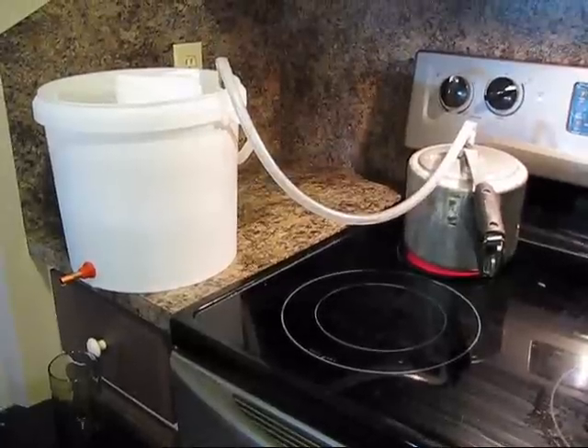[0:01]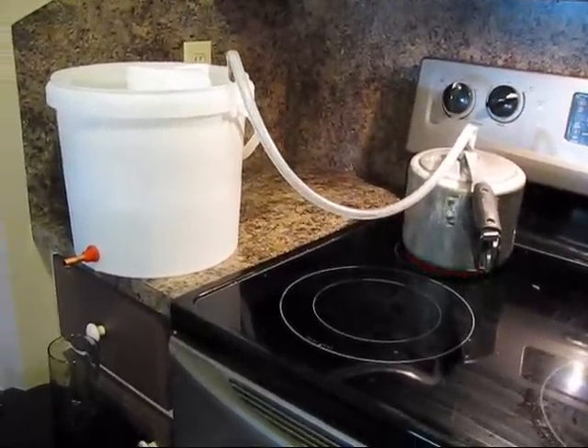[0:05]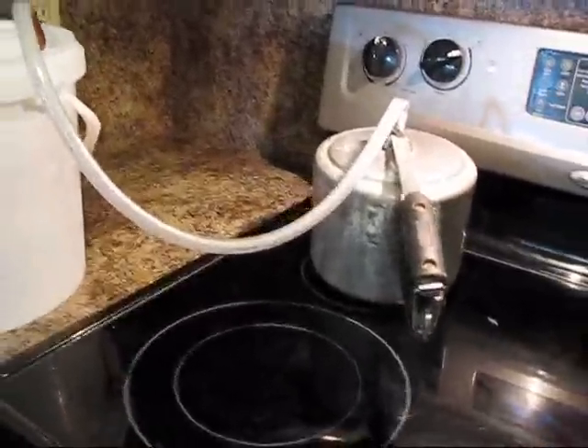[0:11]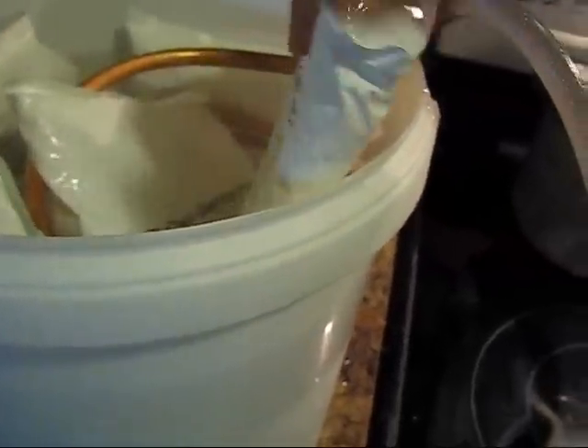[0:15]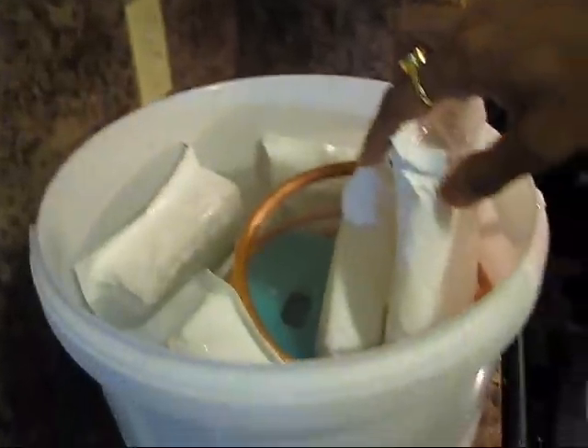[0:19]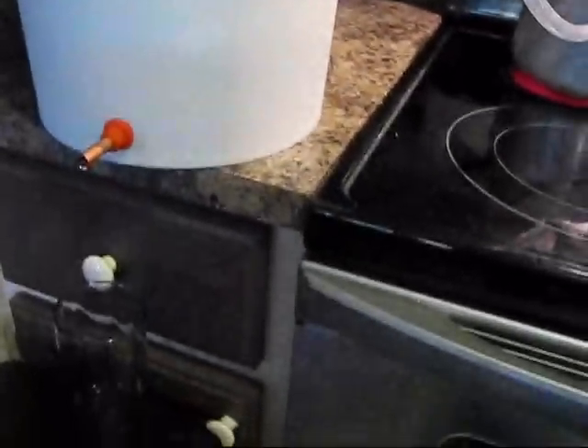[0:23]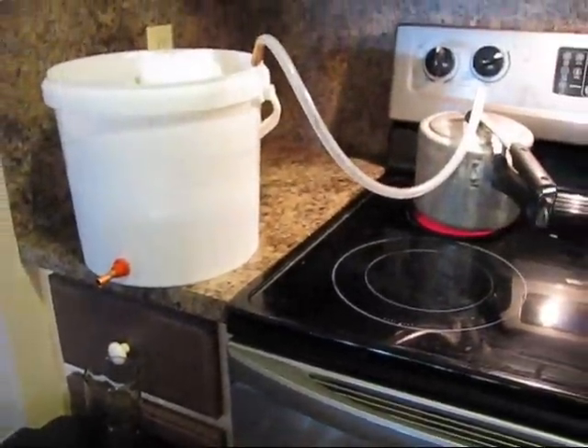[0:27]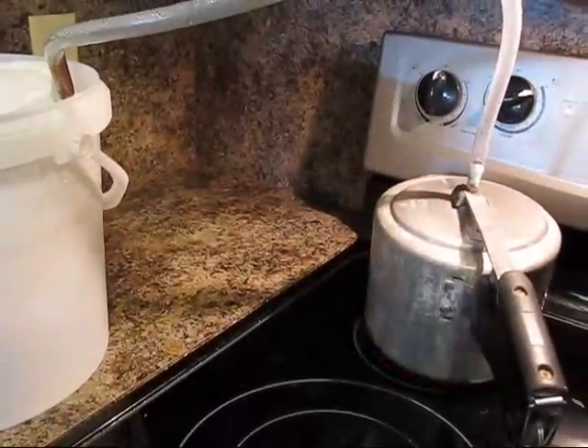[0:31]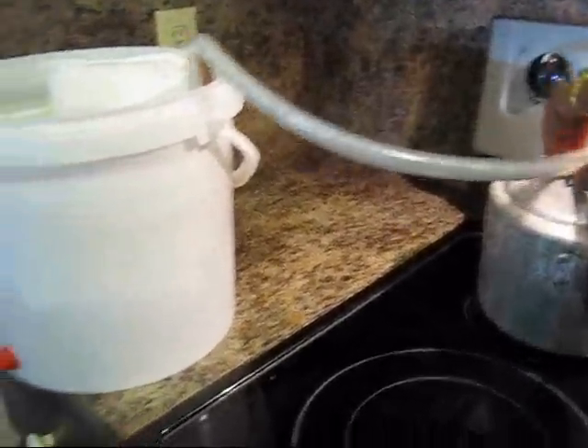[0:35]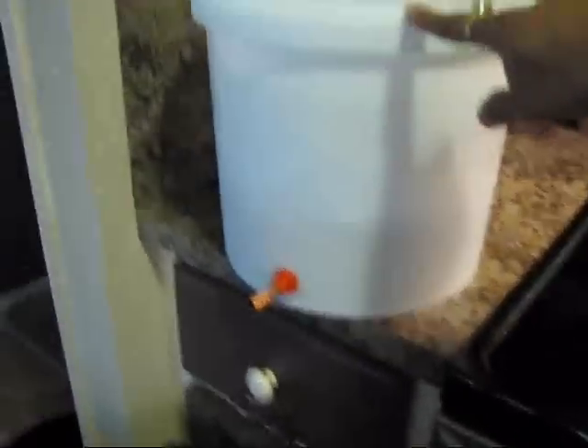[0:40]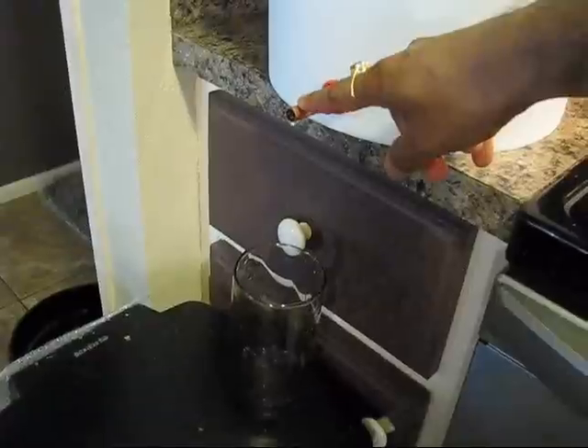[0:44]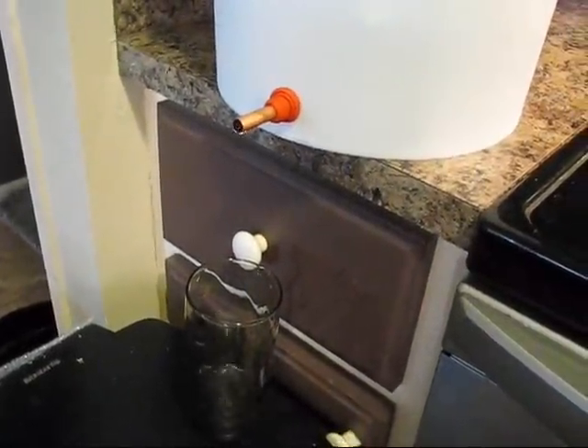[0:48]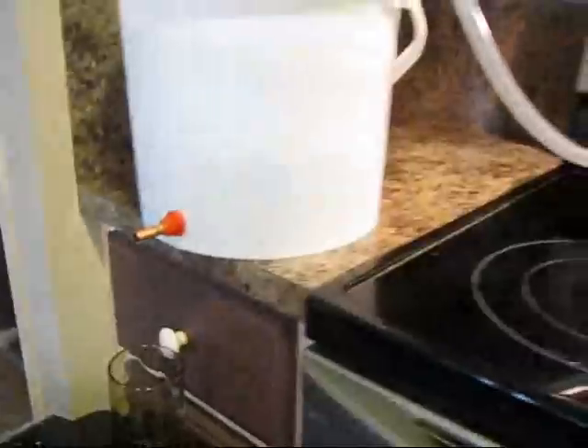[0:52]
Hello, in this video we'll show you how to make a steam distiller at home using a pressure cooker and copper coil with ice or ice pack in the bucket. You can see right now I'm just testing. This system is boiling water inside this pressure cooker, and hot steam is coming and condensing in this bucket, and I'm collecting these cold water droplets in this glass.
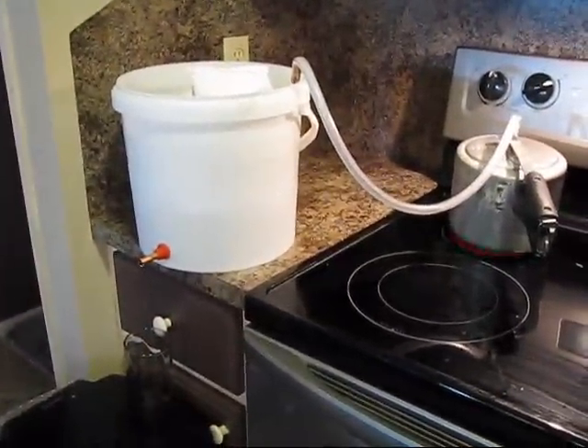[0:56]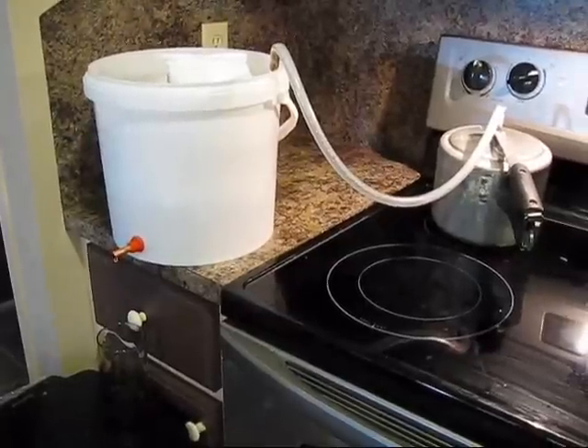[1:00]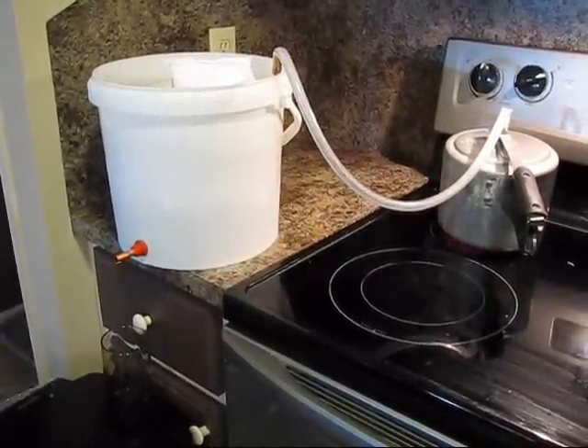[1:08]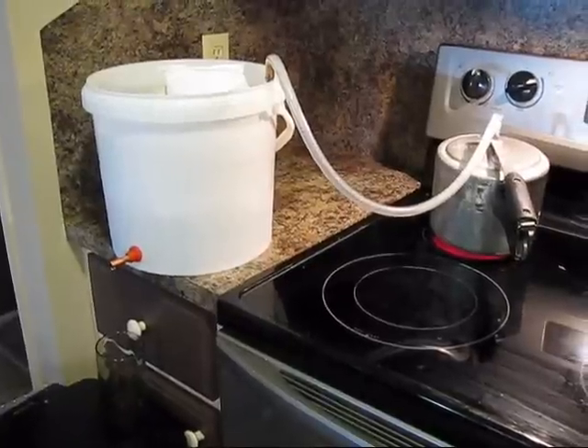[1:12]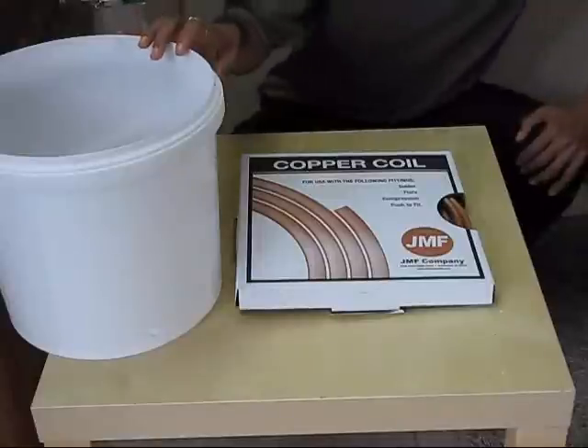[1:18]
So we'll show you how to make this very easy system. We can utilize this to extract essential oils or any other oil from the herb. So let's start to make this one. It's very easy, very cheap, not very expensive.
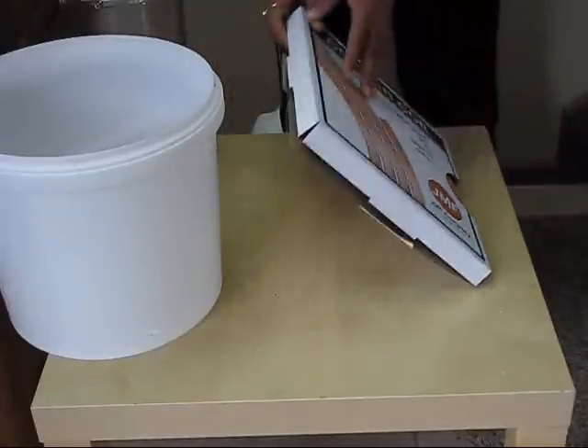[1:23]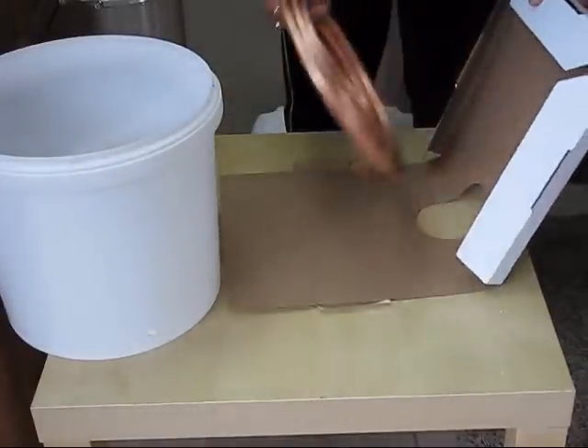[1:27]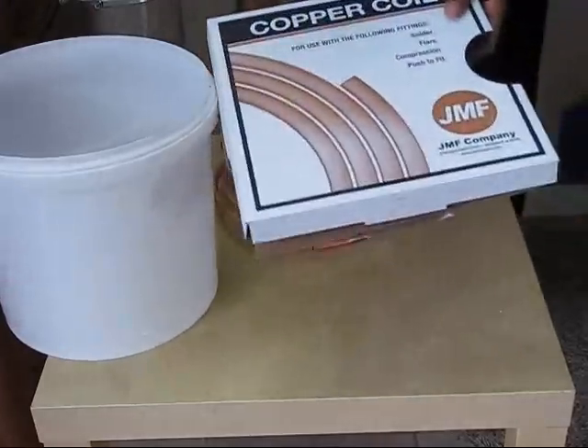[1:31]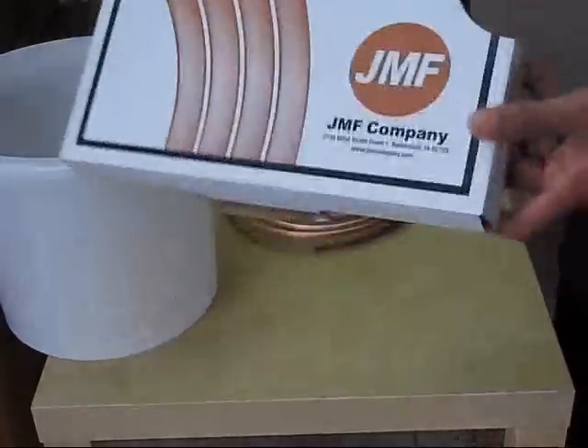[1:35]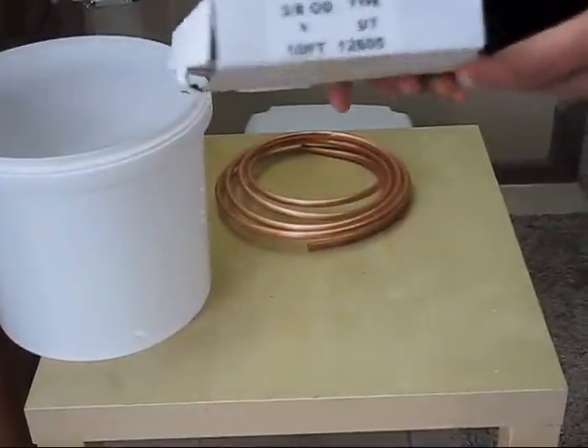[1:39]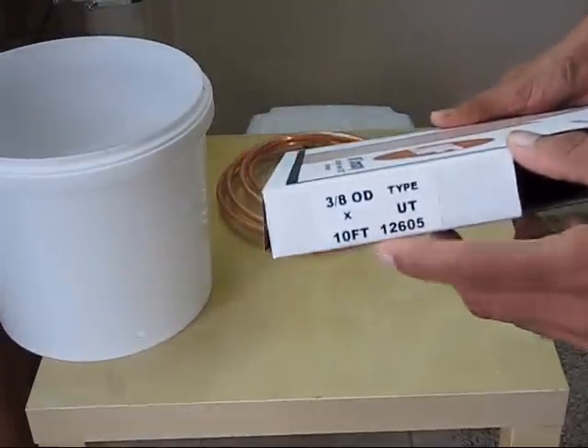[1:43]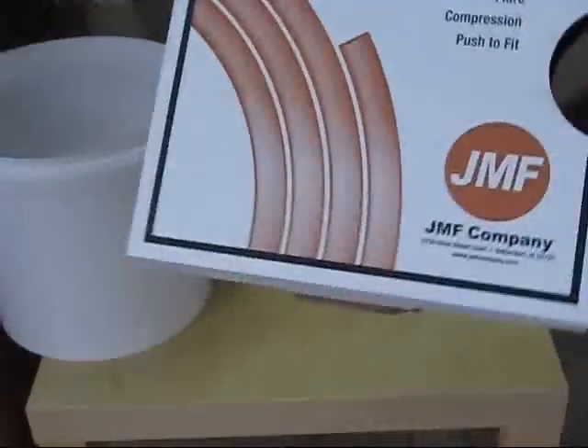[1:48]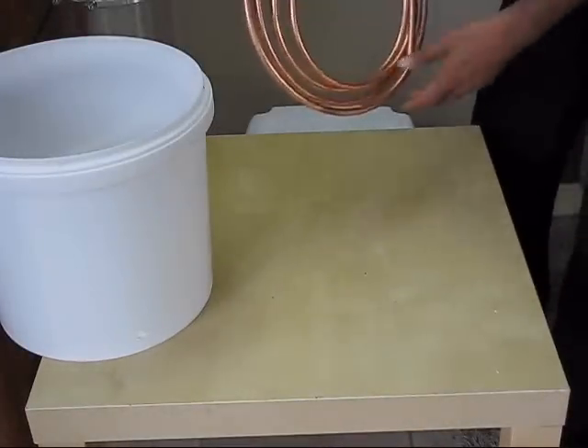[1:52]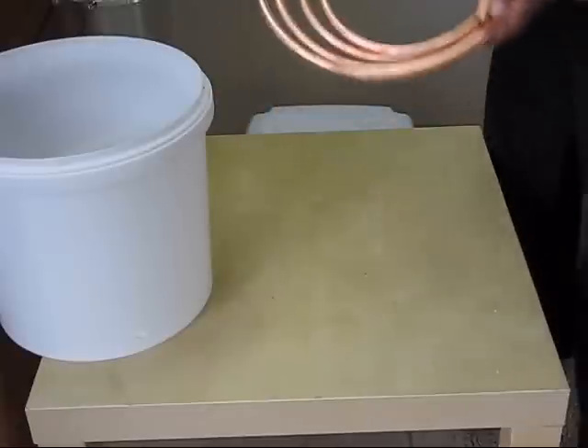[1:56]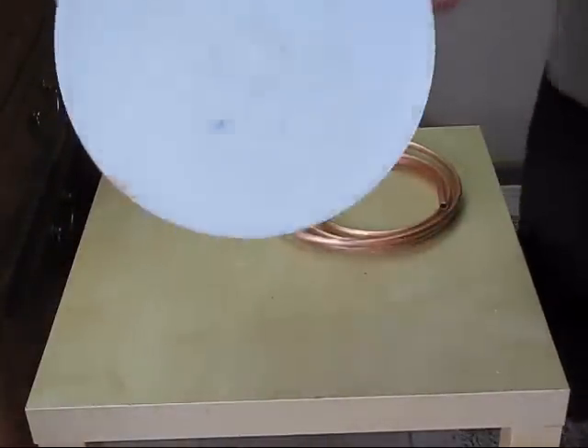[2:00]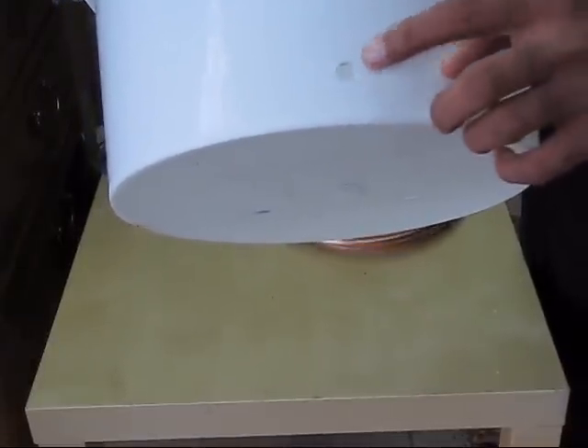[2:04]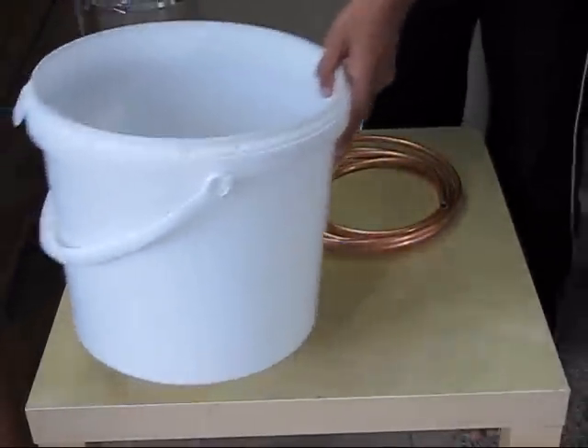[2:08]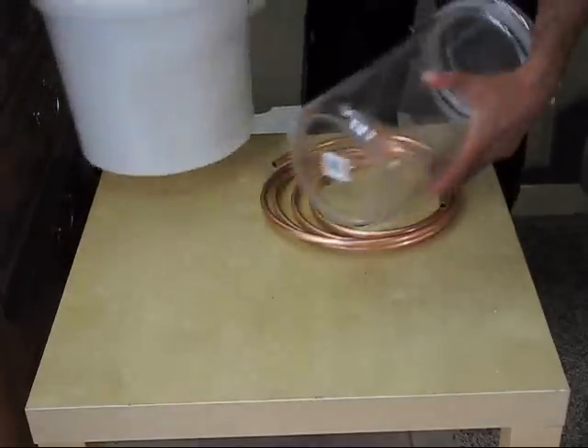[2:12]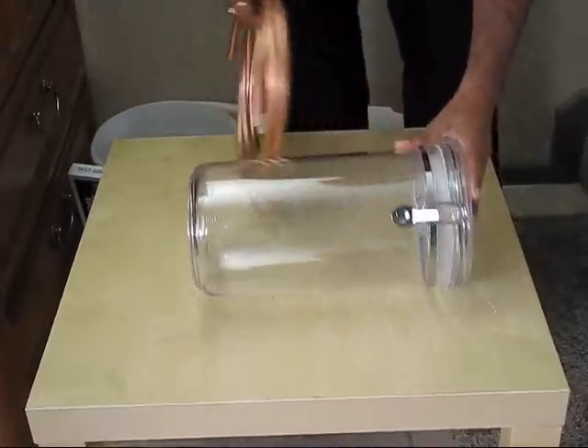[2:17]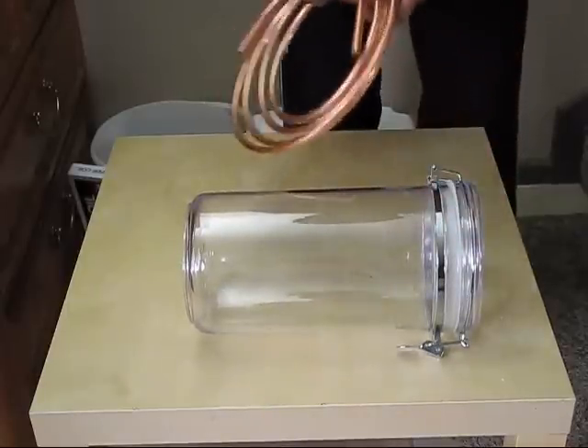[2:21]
Hello, in this video I will show you how to make a condenser coil from the copper coil. For that I have got this 10 feet copper coil. You can see the specification over here, it's written 10 feet, 3 by 8 diameter. It's hollow, so it's very easy to bend. And I have this bucket, and I made a hole which is 3 by 8. So first we'll make a coil, and for that I'm using this big jar.
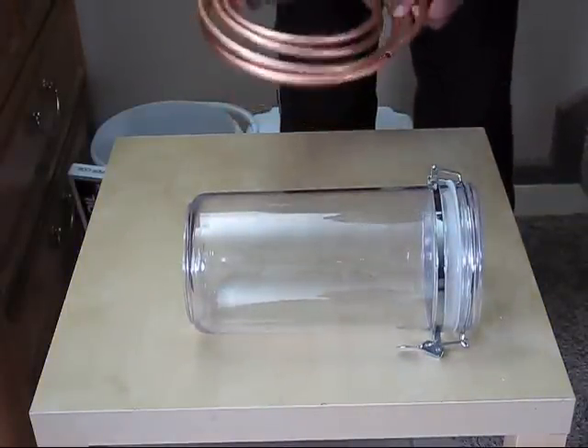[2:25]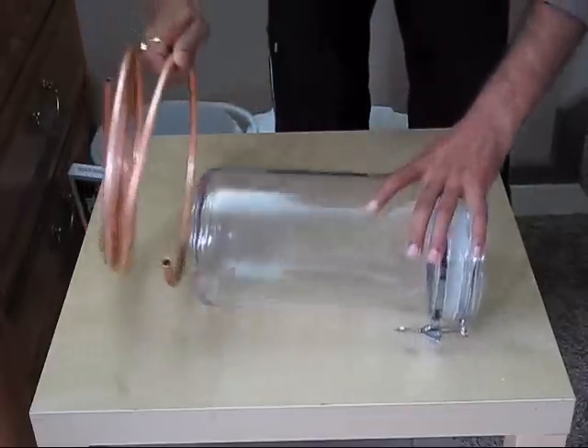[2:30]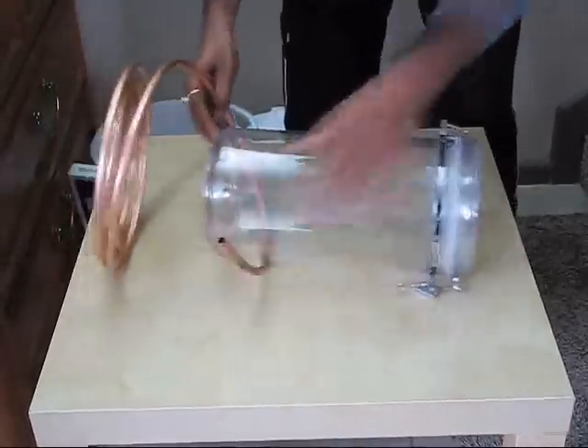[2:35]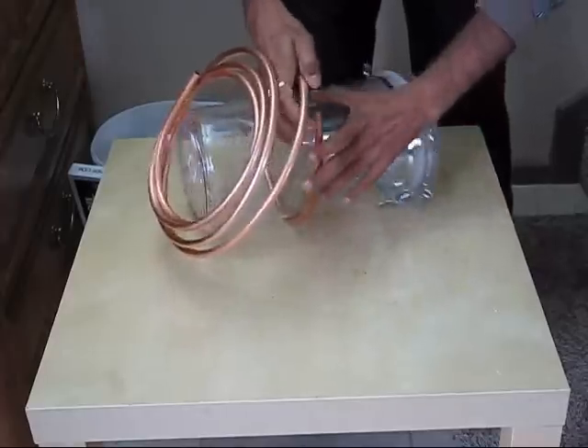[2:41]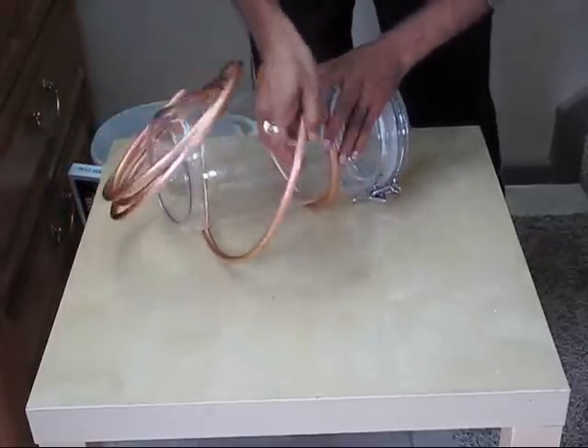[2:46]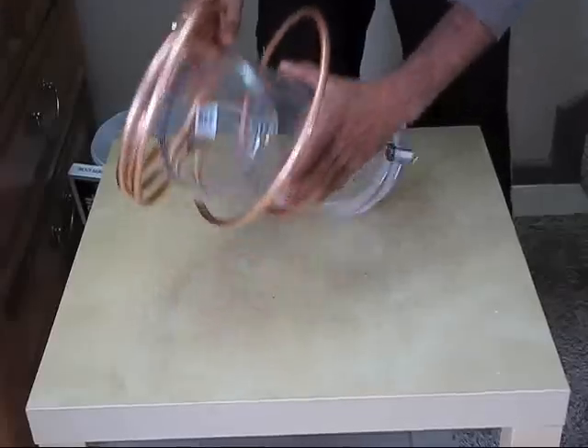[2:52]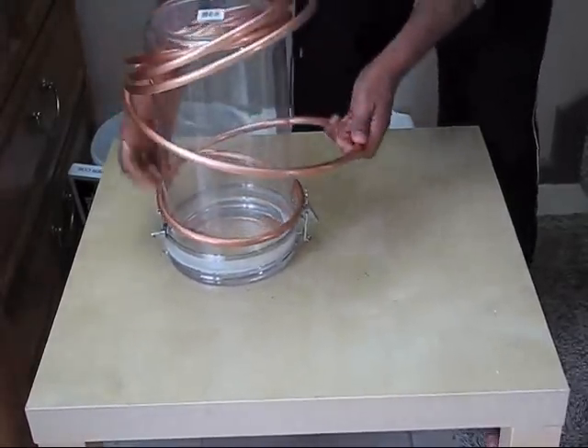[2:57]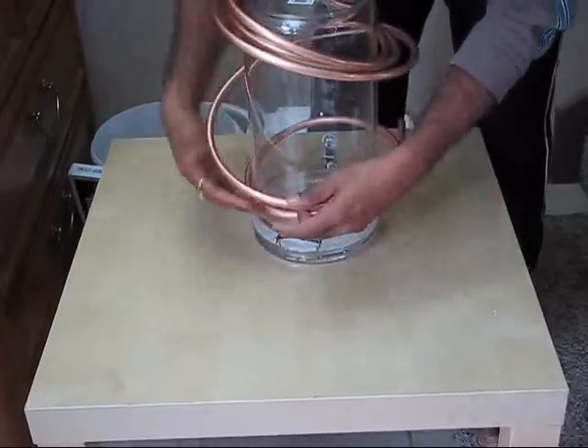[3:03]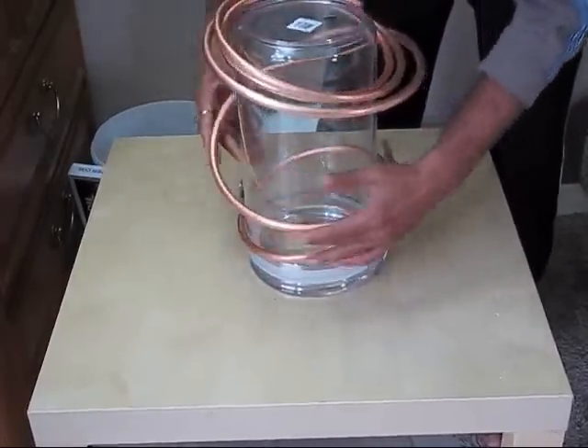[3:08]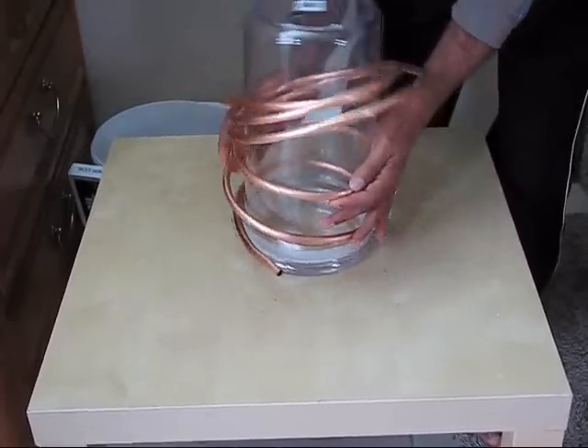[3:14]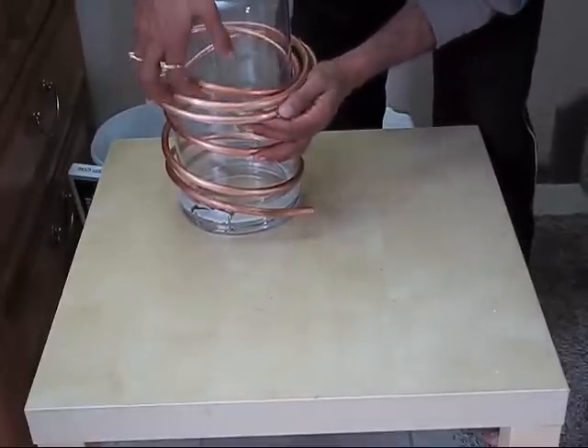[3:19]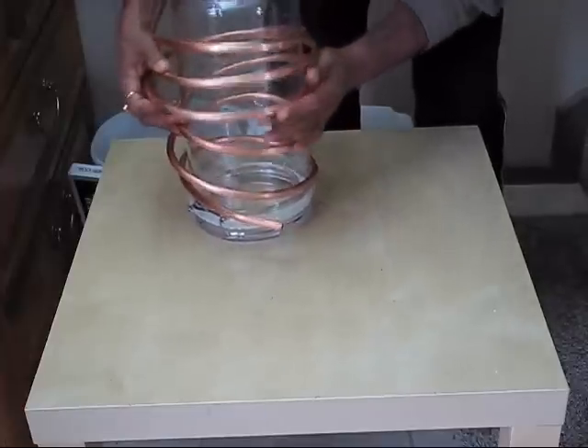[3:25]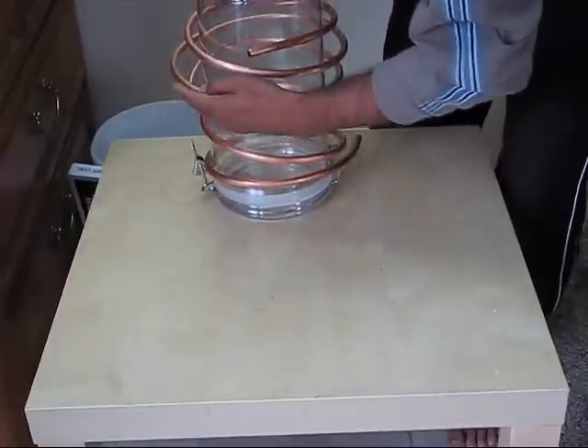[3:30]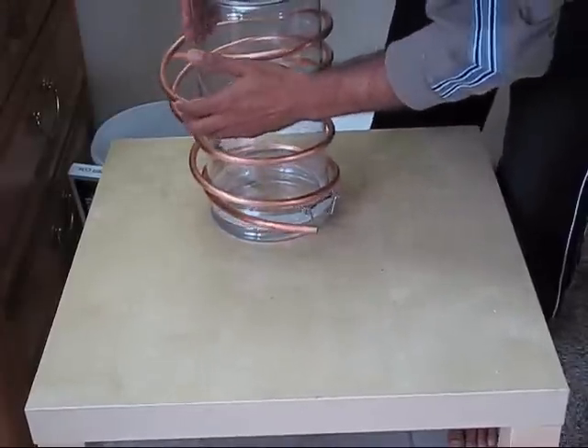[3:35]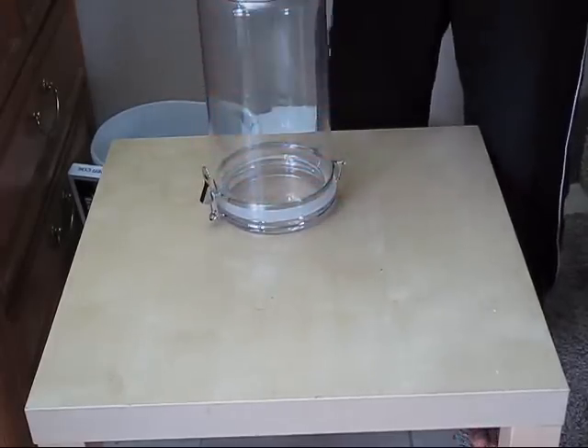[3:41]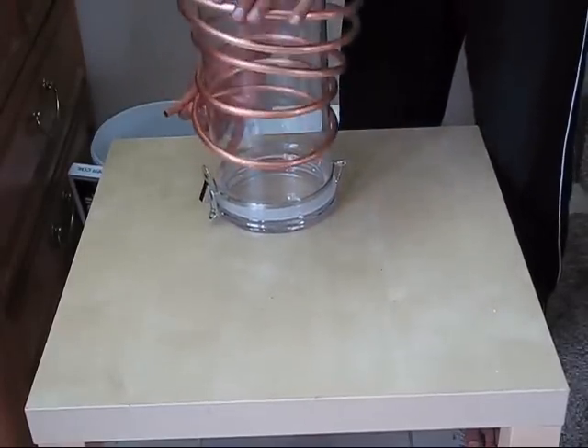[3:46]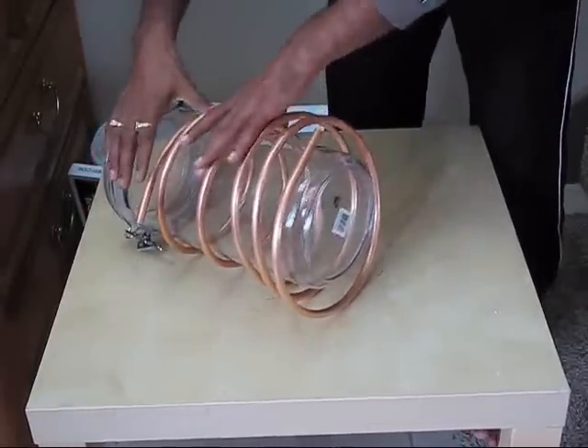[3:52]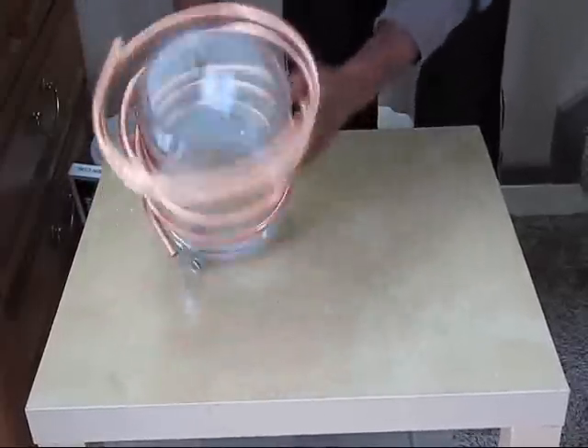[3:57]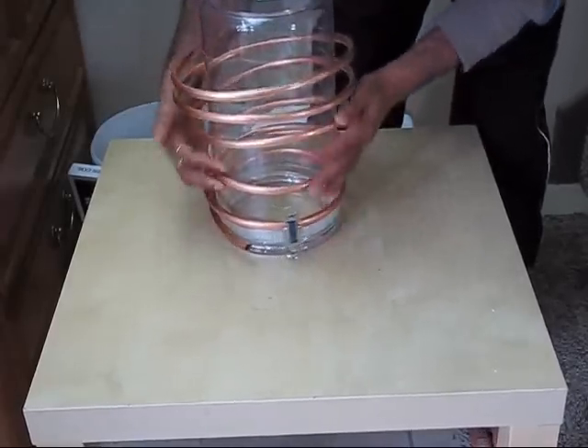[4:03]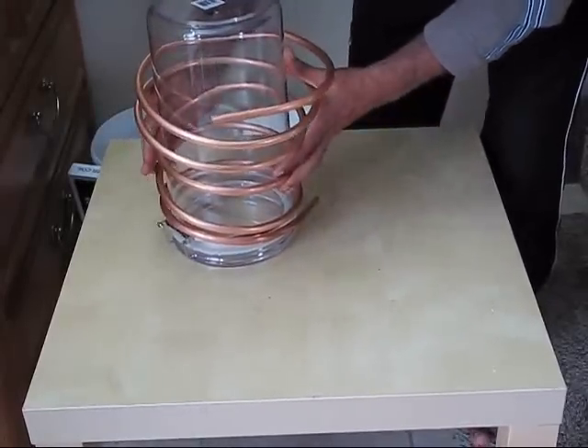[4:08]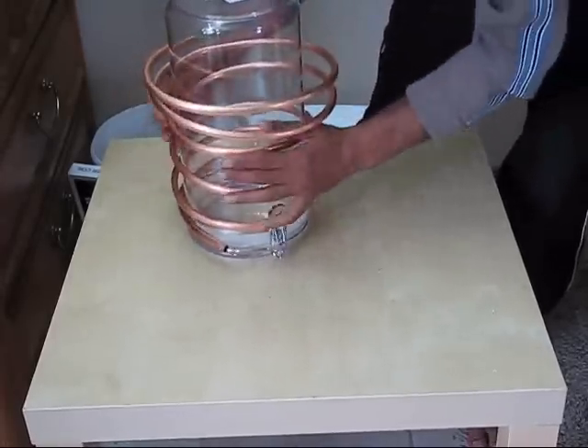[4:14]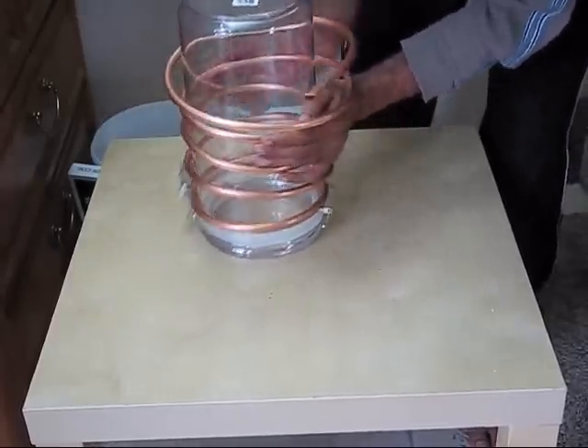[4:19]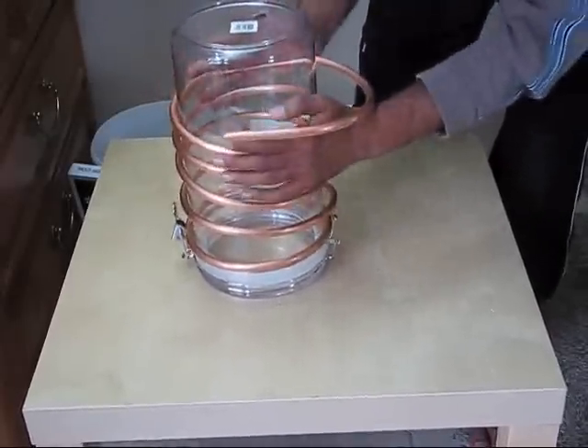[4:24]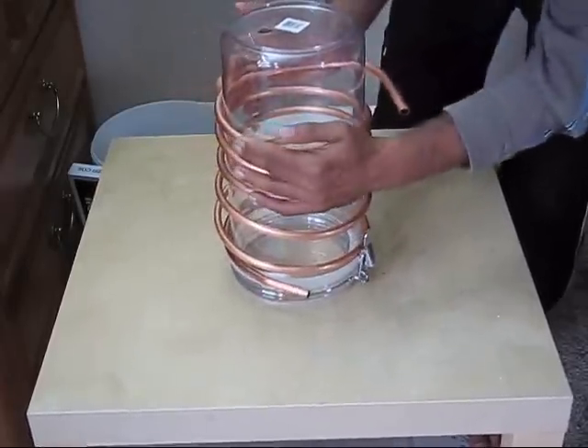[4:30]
So let's wrap it with the same diameter. Basically you need to press, you can easily hand press it to make a good coil. We need to just roll it around this box. Let's see how many rounds we can make. This is good, but let's give it some better shape once again, bend it more. It should be like a spring shape. It's perfect.
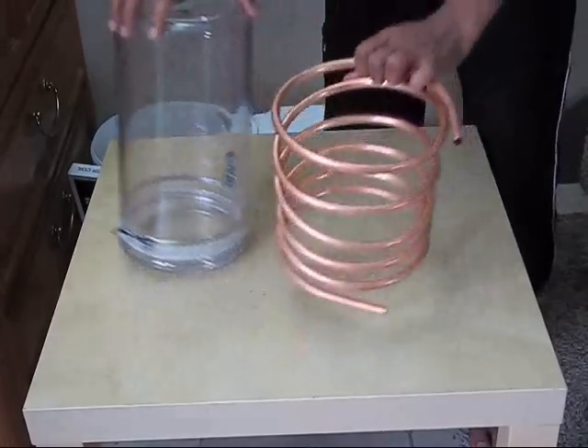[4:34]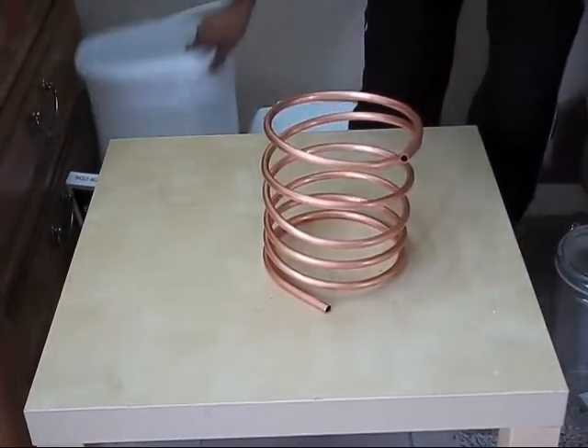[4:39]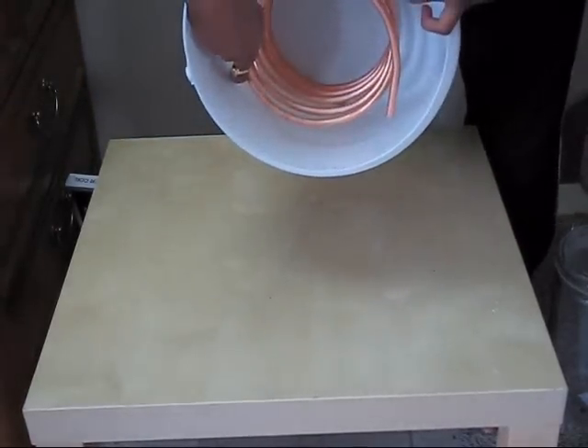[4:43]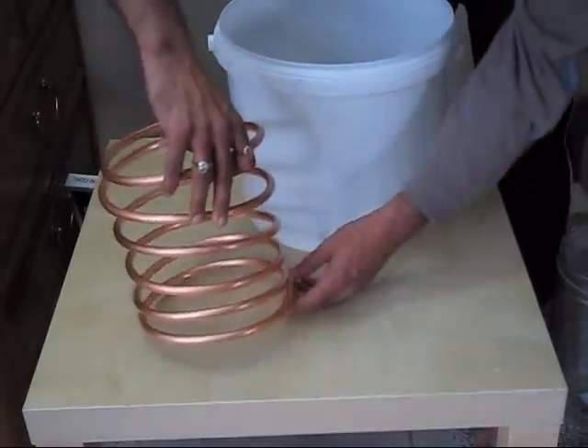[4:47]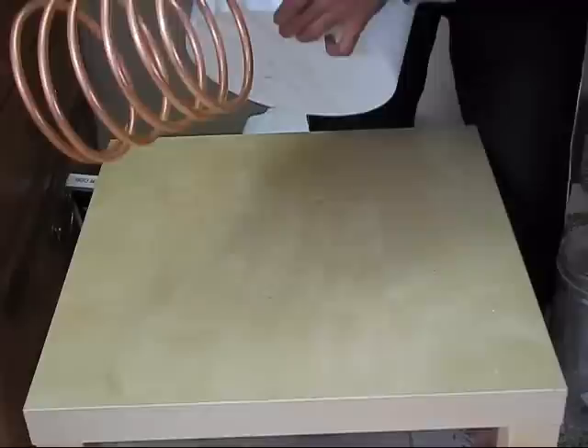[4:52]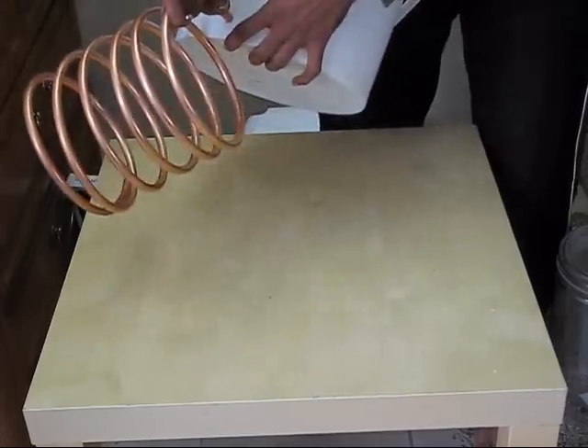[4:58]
So we made a condenser coil which can fit inside this bucket. You can see this hole is exactly fitting, yes, like this one. It is exactly 3/8.
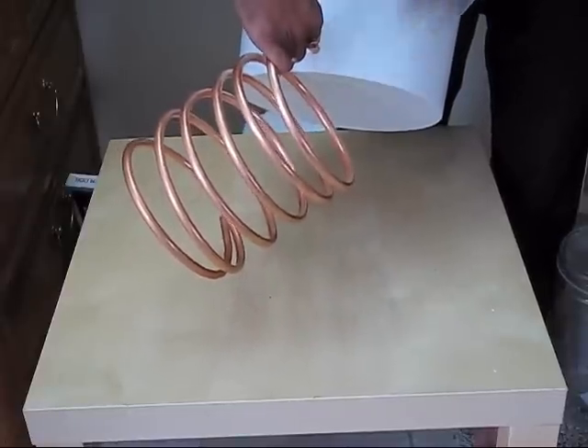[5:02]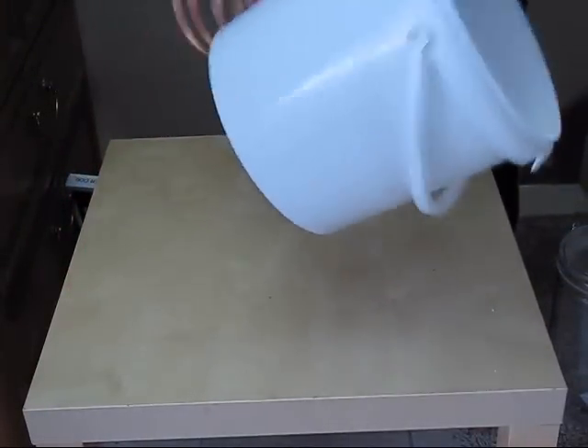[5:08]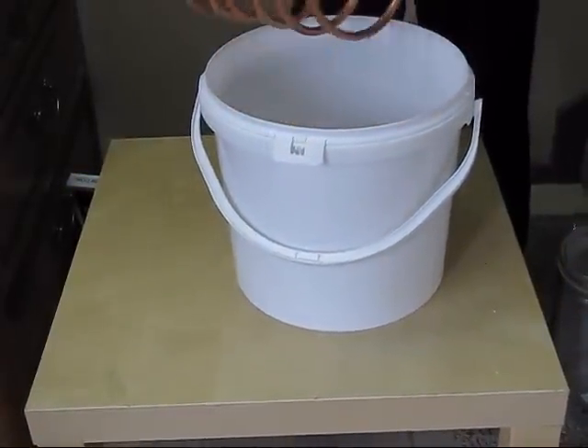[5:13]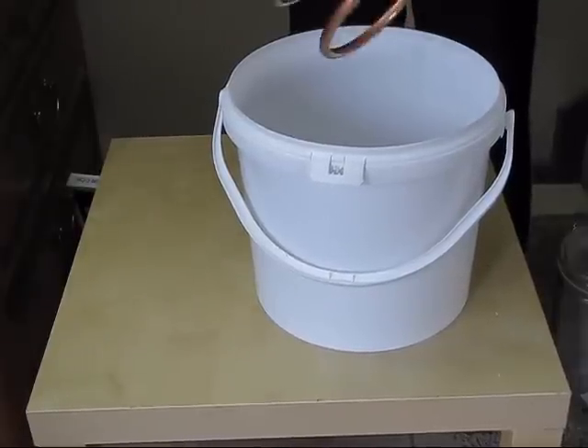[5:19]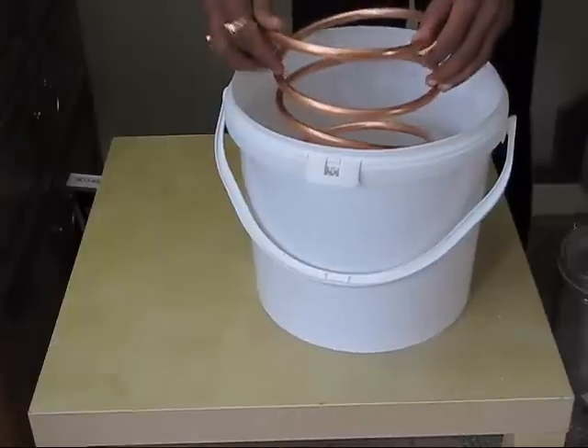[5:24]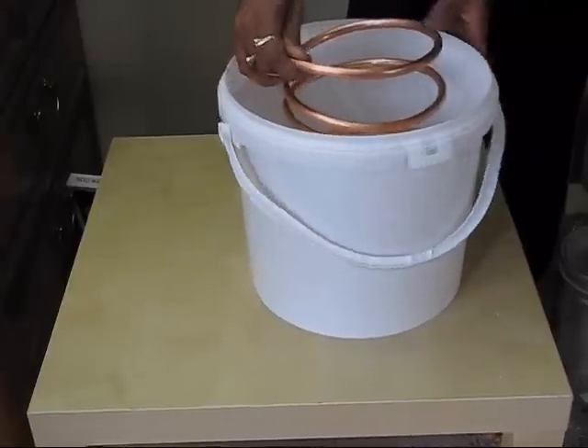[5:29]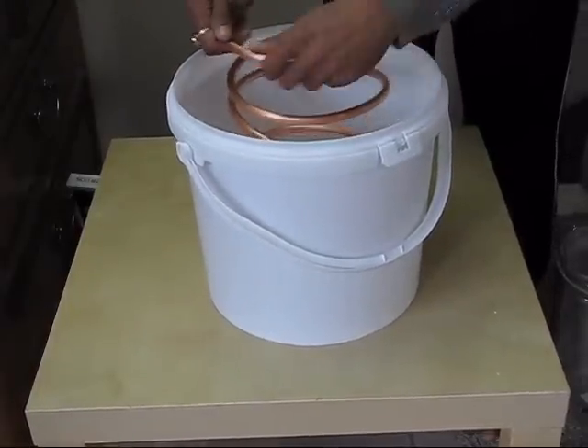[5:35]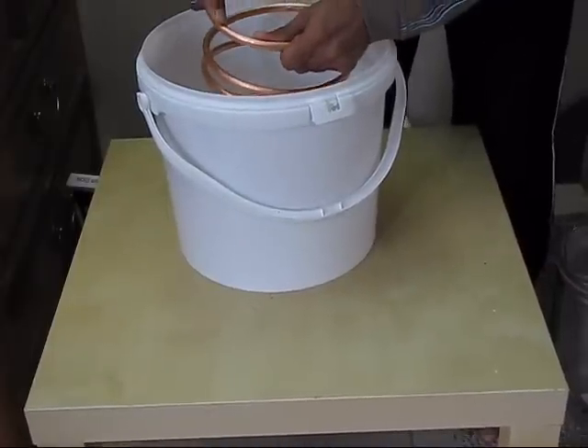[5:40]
So we need some rubber gasket or o-ring to fix it inside. Now I can expand it a little bit, so you can adjust according to how much you want. This would be good. And now we can make it straight a little bit, like this.
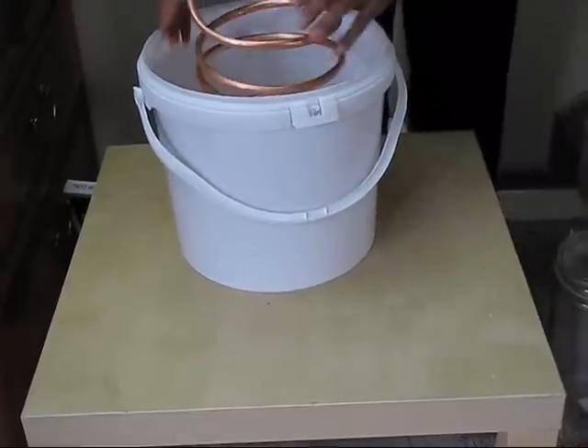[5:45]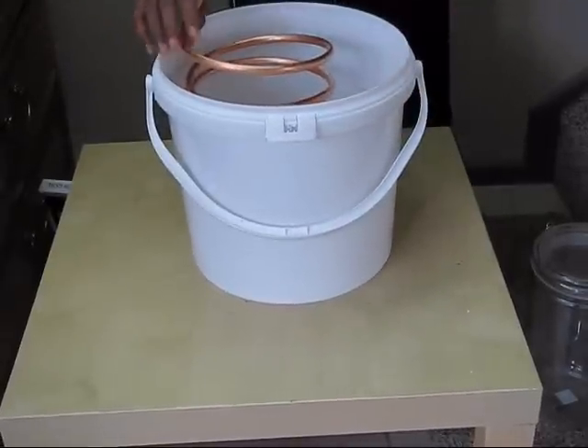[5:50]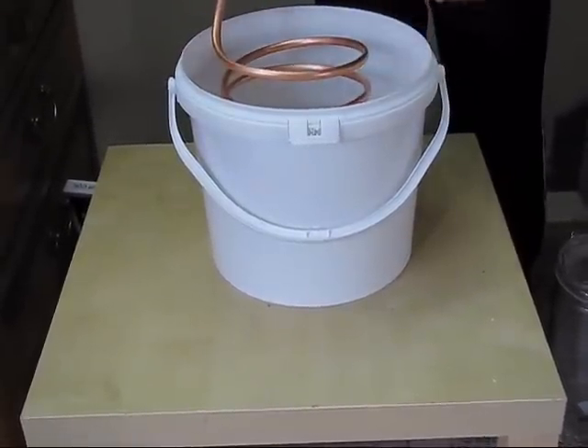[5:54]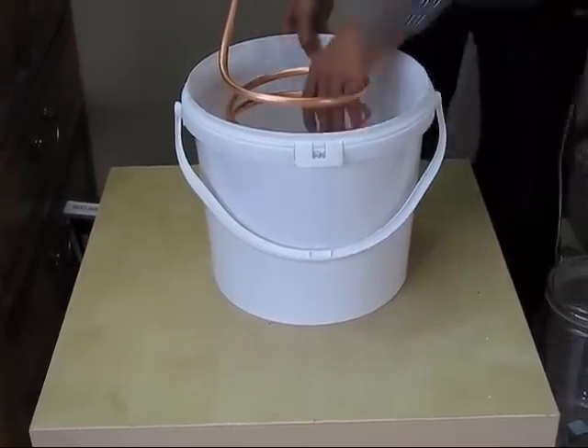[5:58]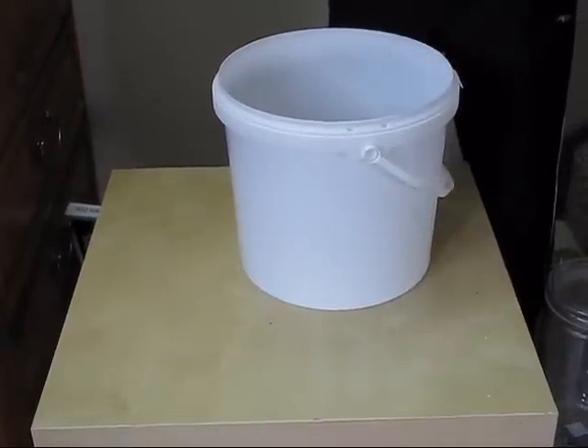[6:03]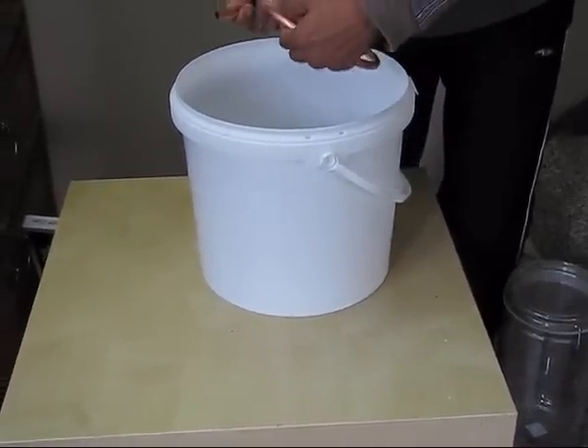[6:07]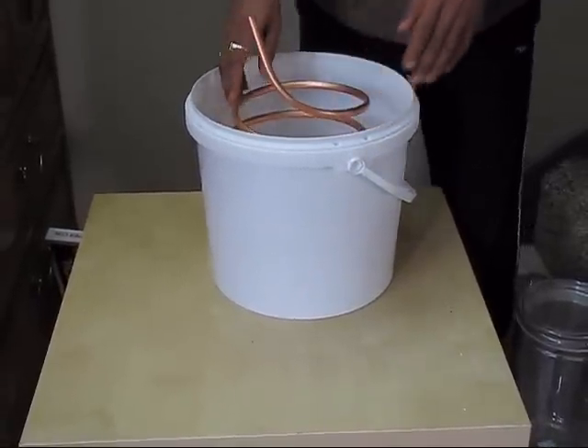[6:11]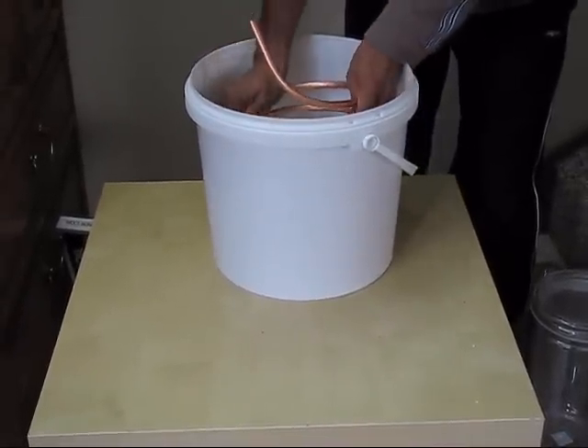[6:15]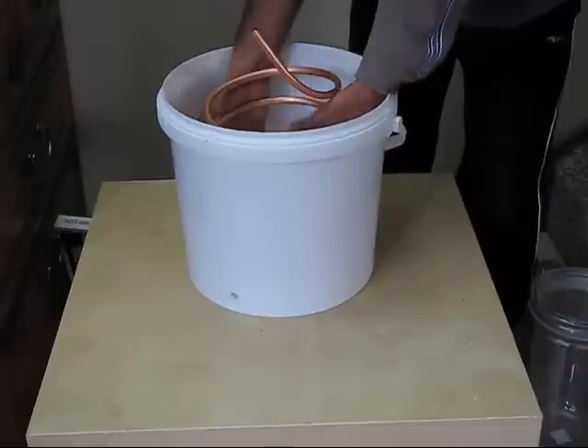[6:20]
And then we'll connect a plastic tube from here, and at the bottom we have to take this tube out from inside to outside. So this is the way we can make a condenser coil for condensing the hot steam and oil.
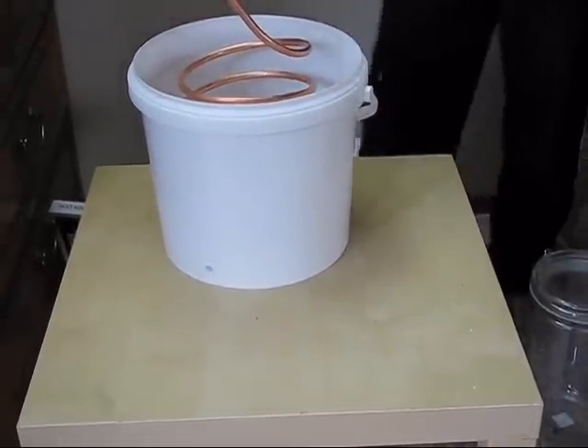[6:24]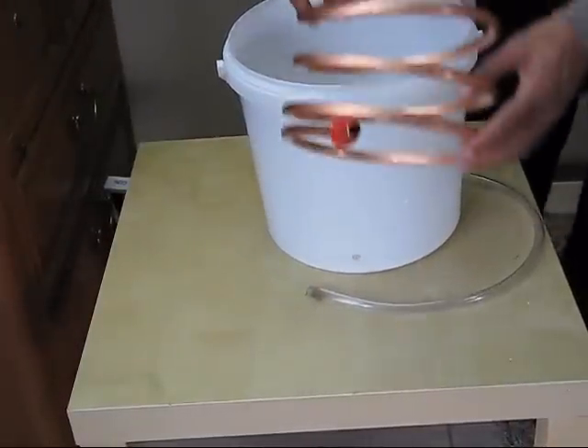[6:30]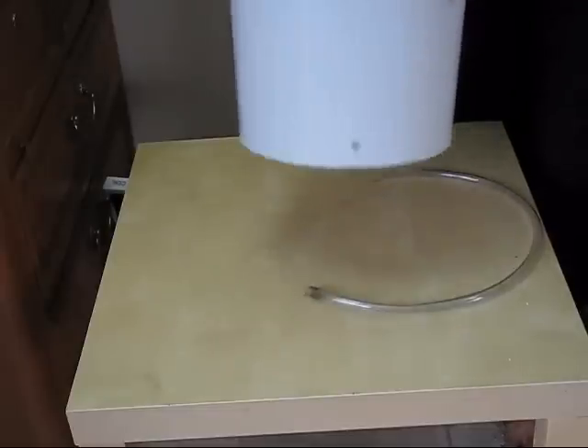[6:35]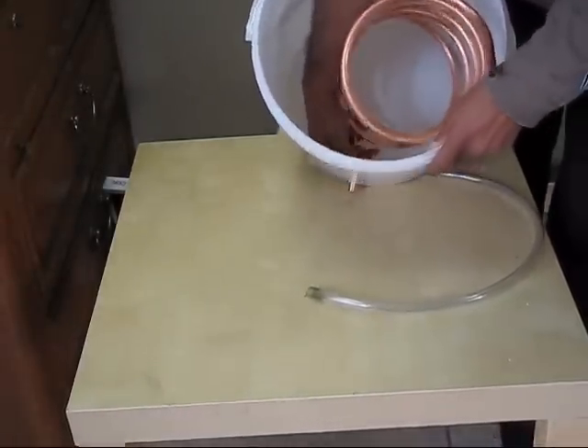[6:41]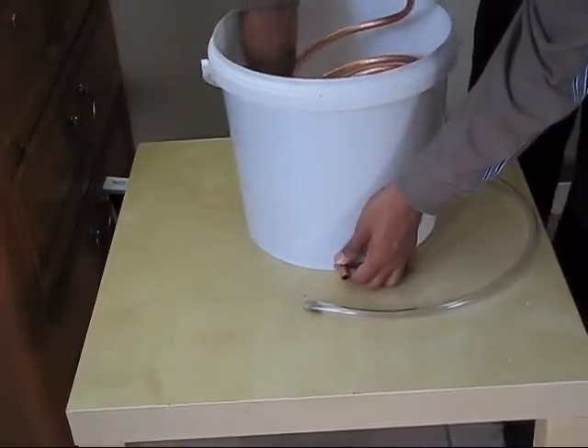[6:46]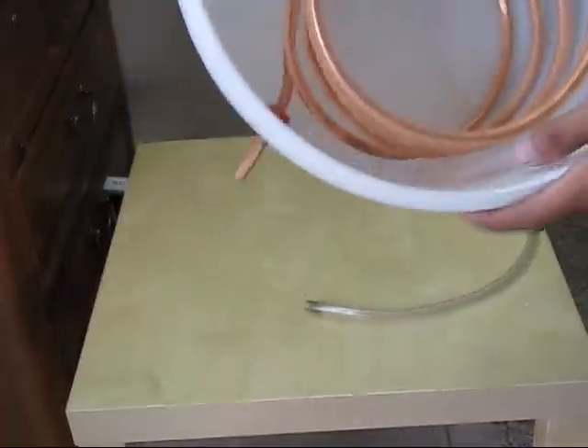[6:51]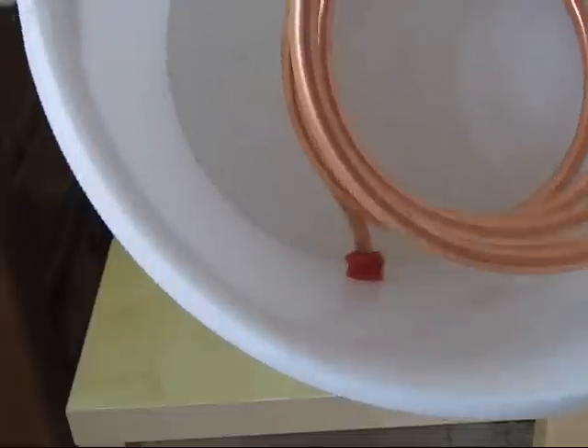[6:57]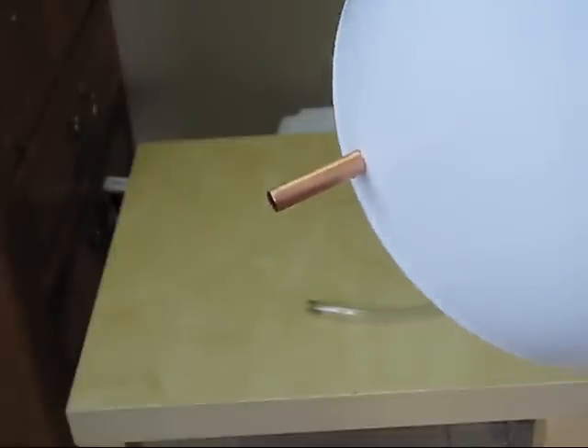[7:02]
So now I have bent this tube at the bottom so that I can remove it from the hole, like this. You can see it came out. And then I put inside a rubber stopper, you can see easily like this. This will prevent the water from coming out. And if I need, I can add one more o-ring here in this container.
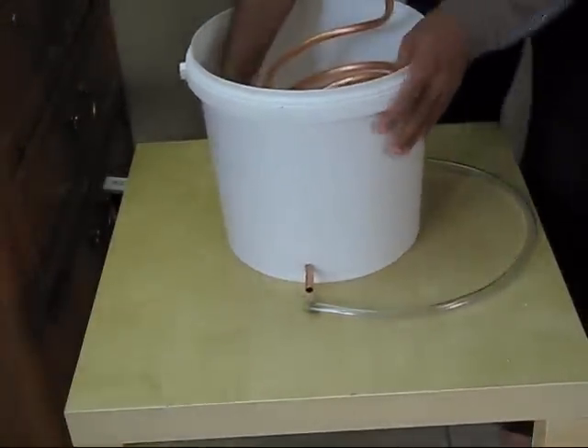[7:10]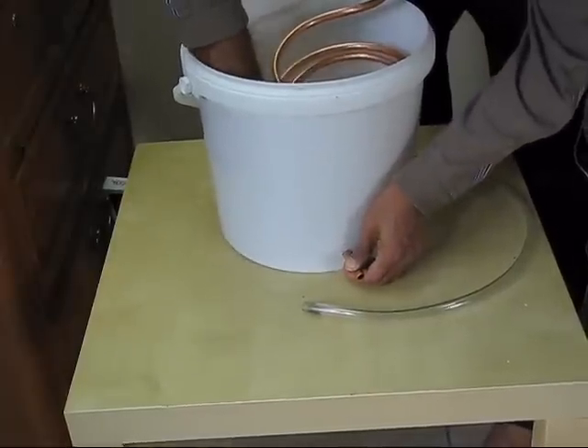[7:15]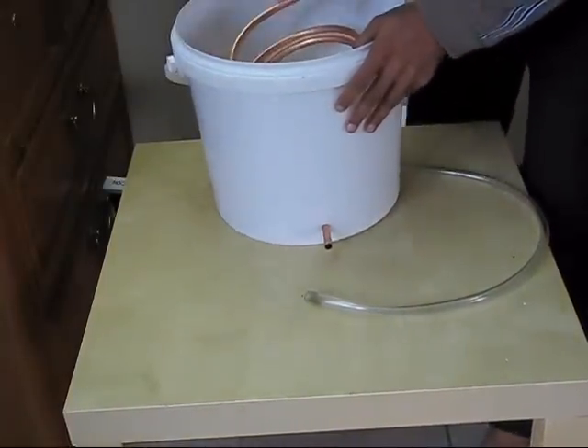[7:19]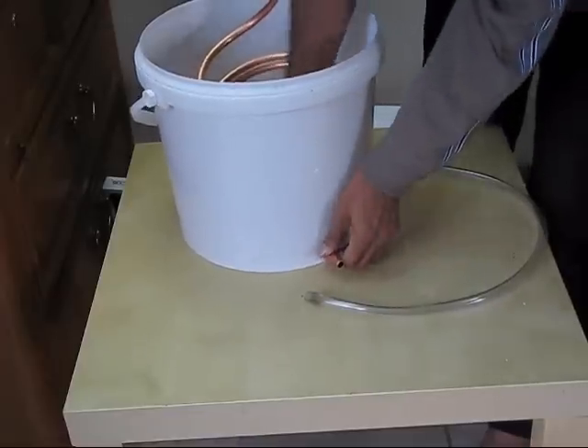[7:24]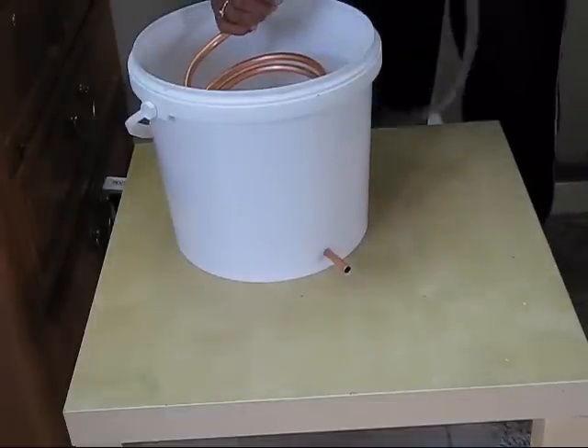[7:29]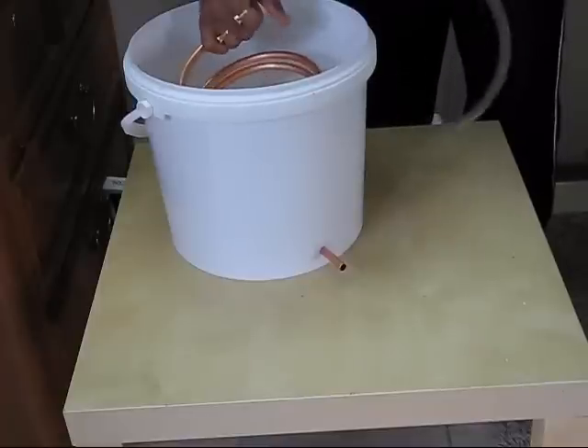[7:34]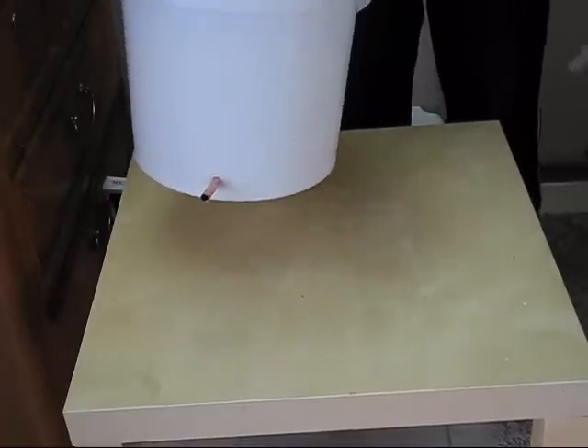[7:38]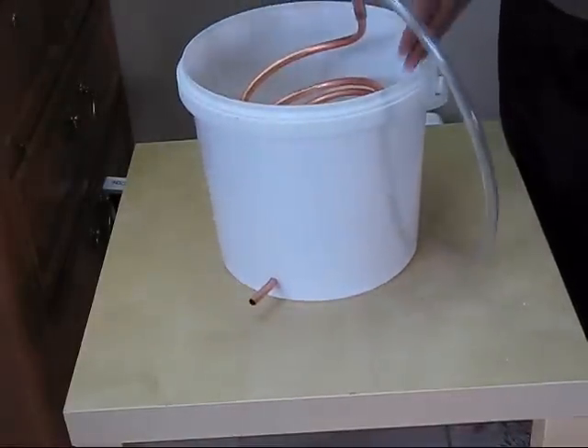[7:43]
So the coil is almost ready. Just a little bit more bend. On this side I have this plastic rubber tube, I need to tighten this again. And this is now ready as a condenser, so we can fill this bucket with water and ice.
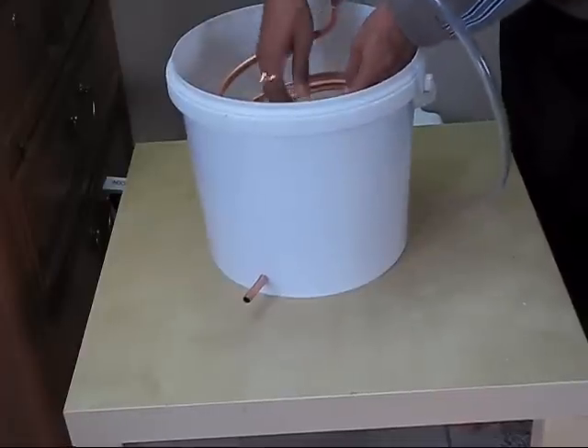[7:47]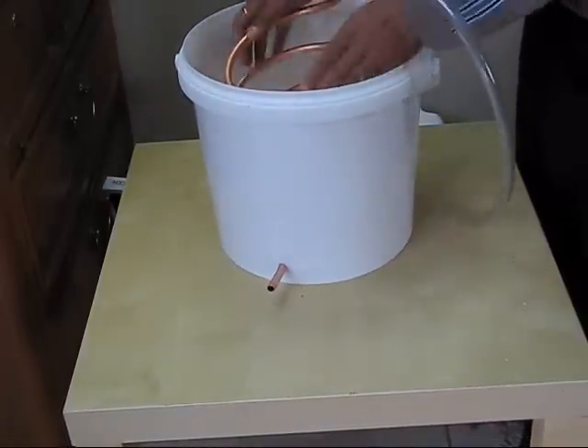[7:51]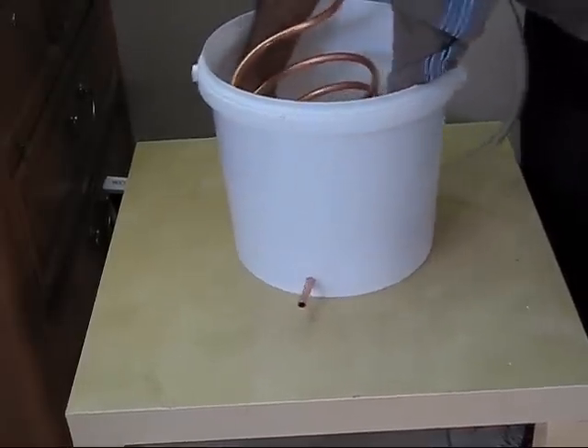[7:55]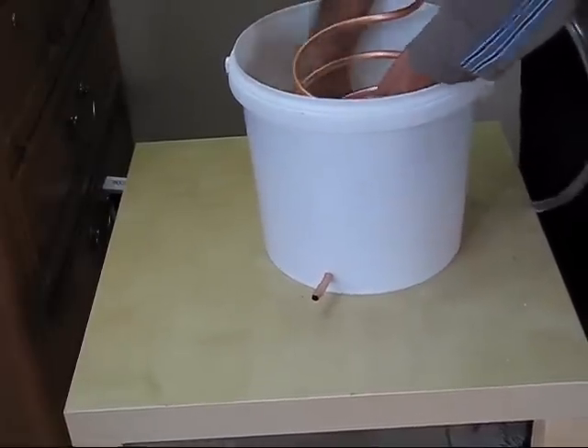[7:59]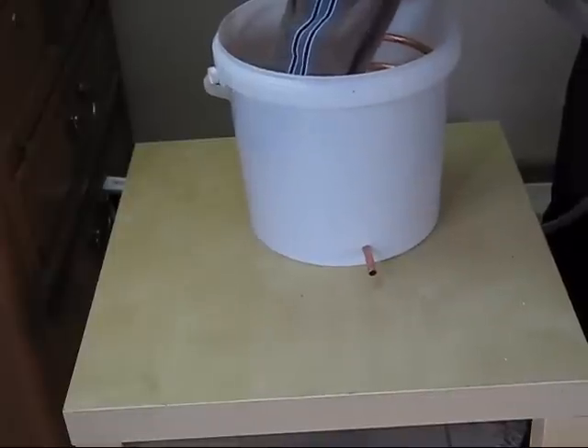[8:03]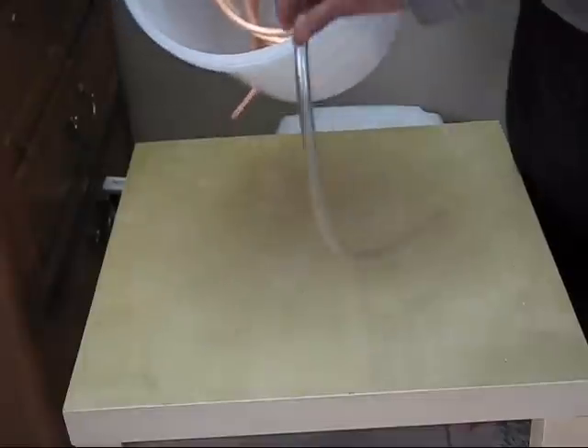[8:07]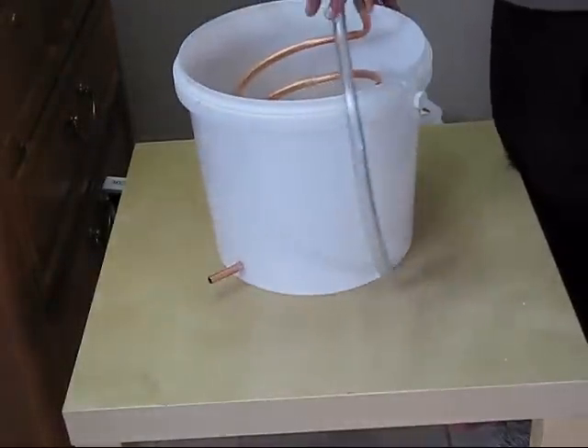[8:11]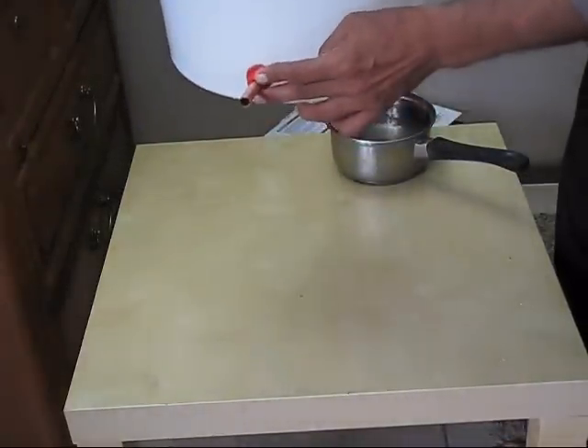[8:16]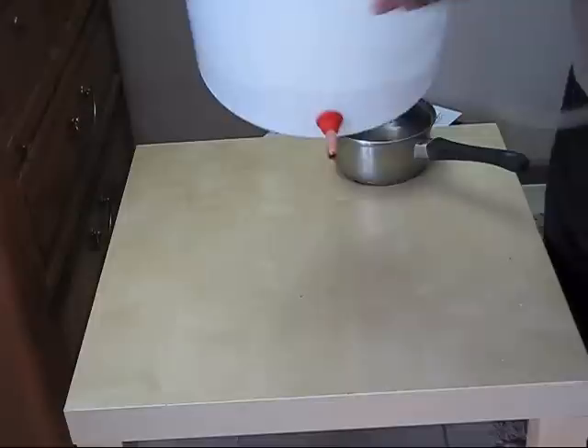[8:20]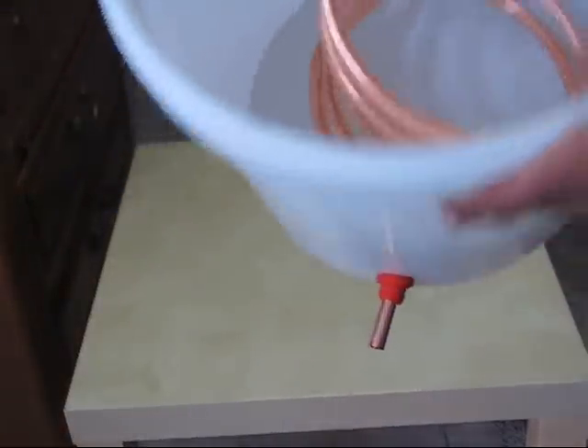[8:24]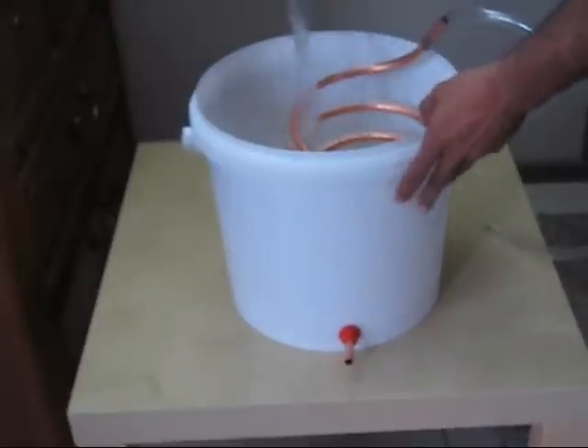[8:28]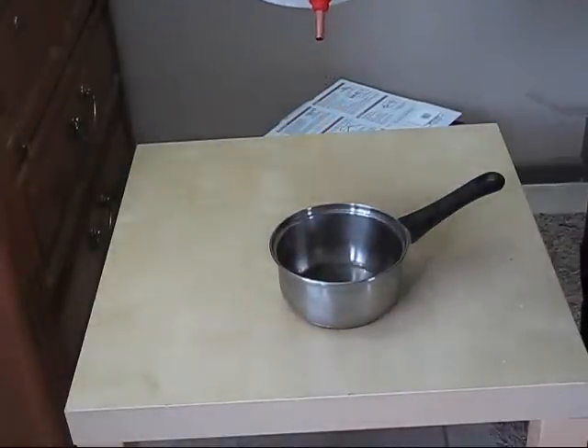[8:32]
We will show you how to do that, and that would be ready as a condenser. Making a little bit better arrangement, so this is ready now. I added a rubber stopper outside and one inside, you can see, to prevent any leak. Let's check if water is coming out. This is good, no leak.
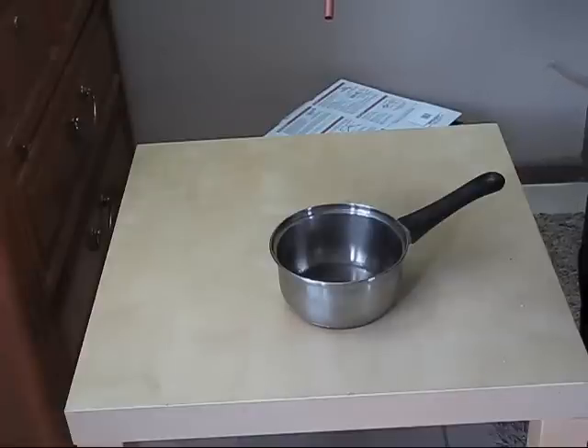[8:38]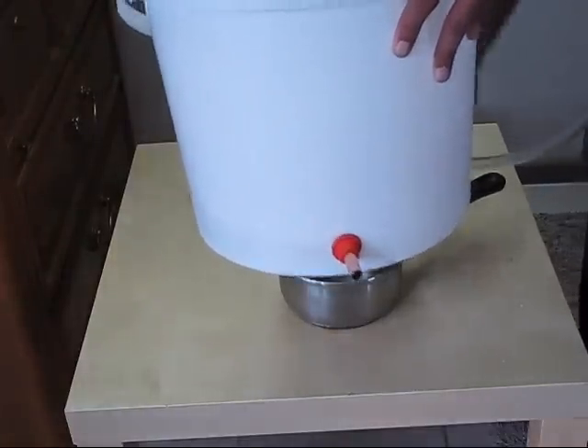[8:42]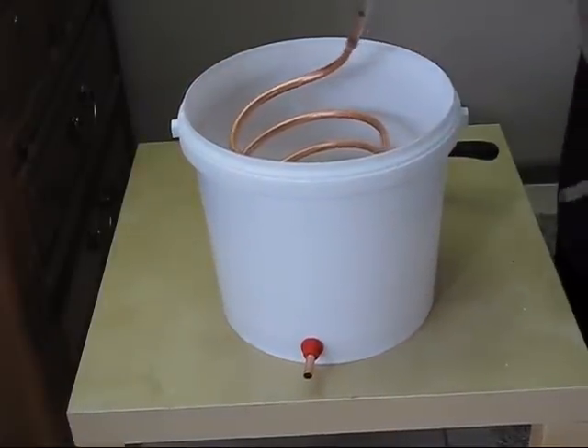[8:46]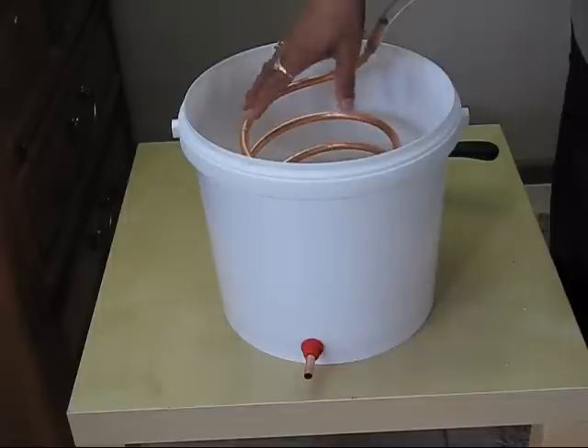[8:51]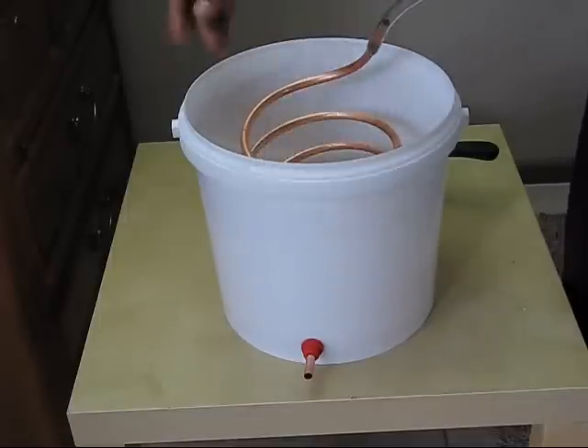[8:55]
We can fill this bucket with water. So now this coil is ready as a condenser coil. We can pass our steam through it with ice water inside the bucket and you can condense the liquid.
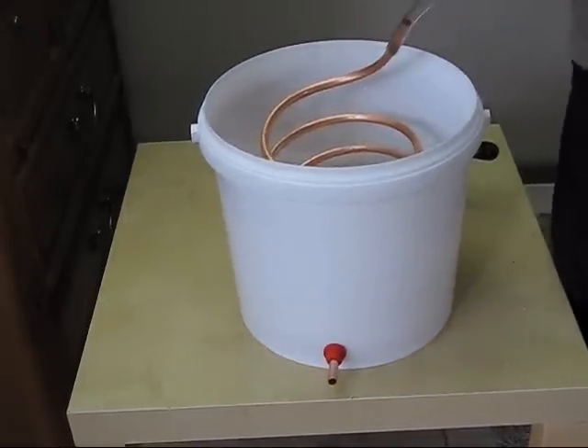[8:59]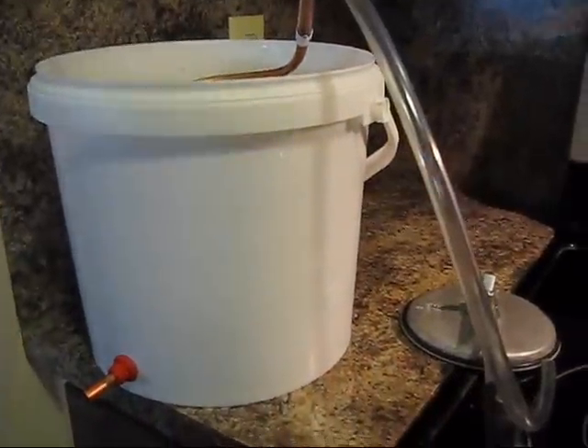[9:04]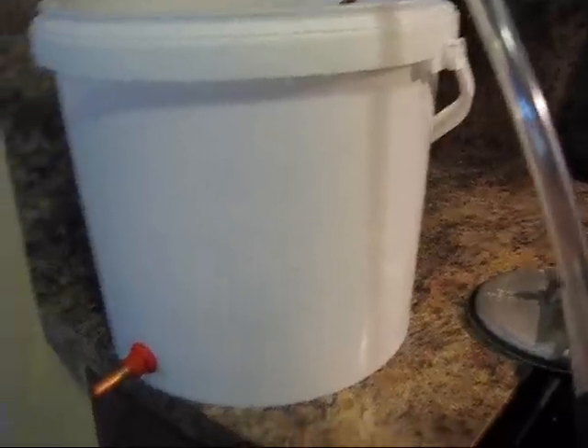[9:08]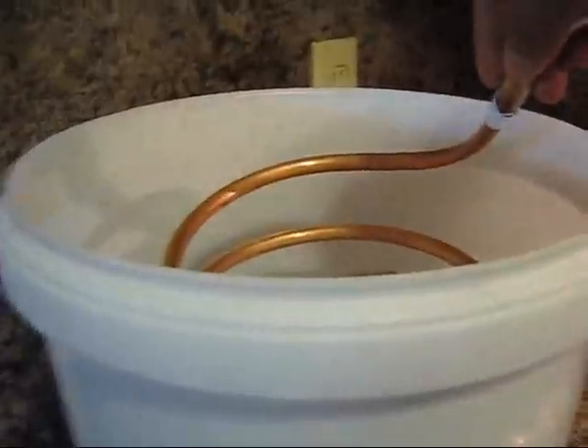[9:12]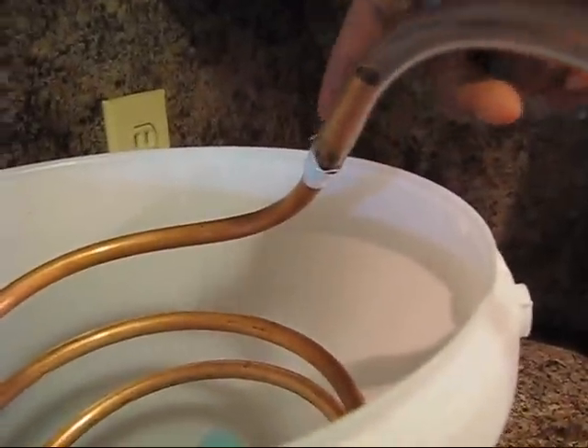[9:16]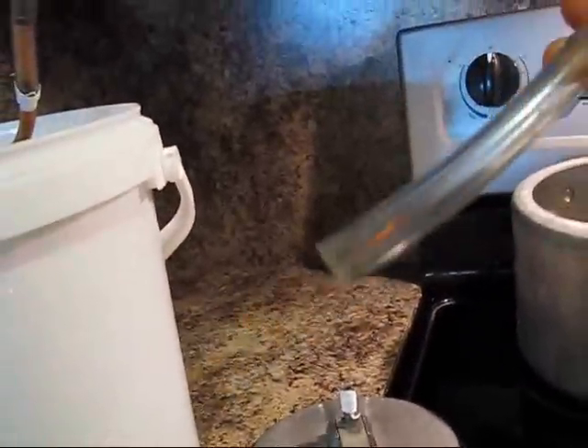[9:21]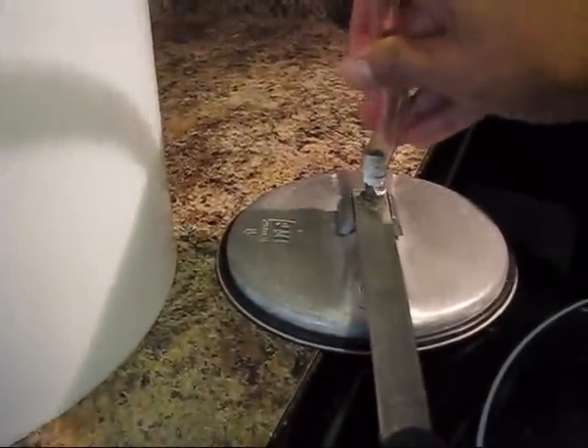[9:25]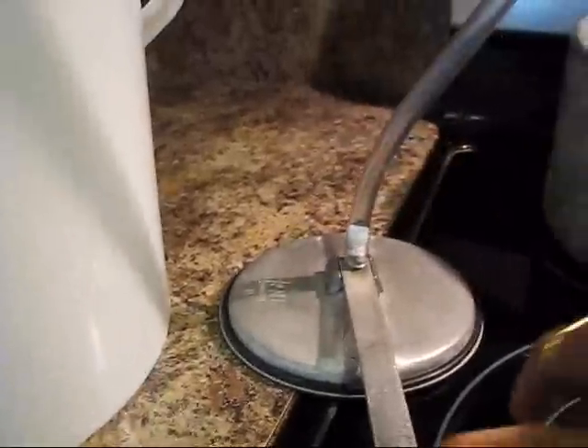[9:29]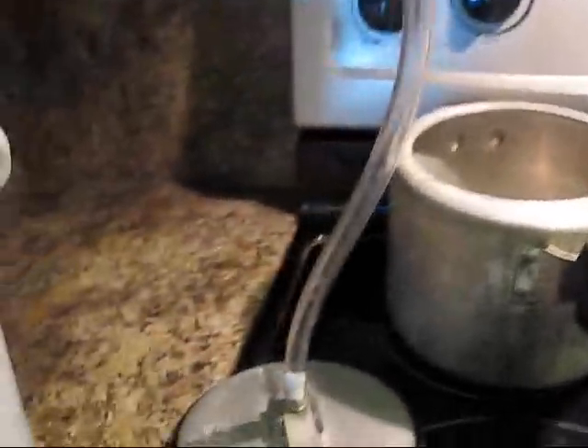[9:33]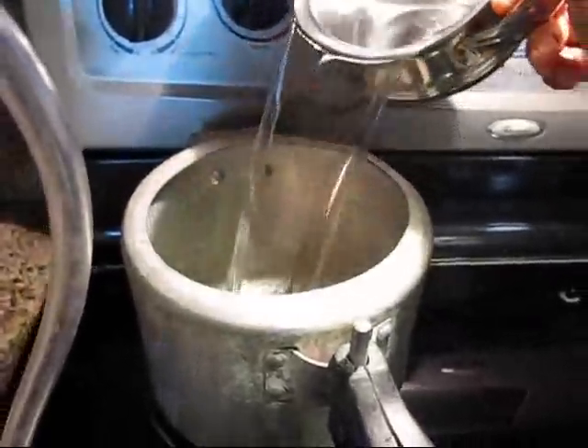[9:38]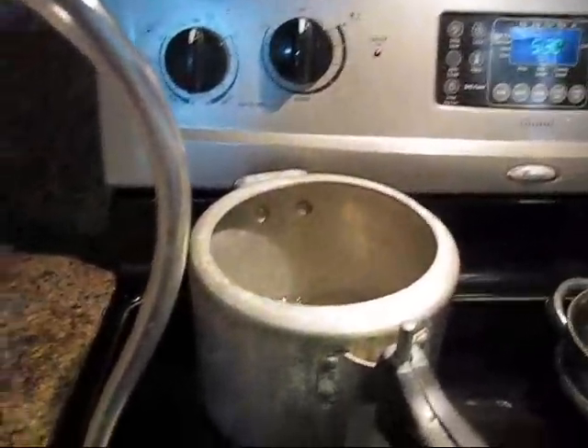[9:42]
Okay, so let's test this system, if it is really working. I put a Teflon tape at this joint so that no steam will come out, and then another rubber tube will go into the pressure cooker lid. And then I will add a small amount of water in this pressure cooker. Right now I am just testing if my system is working, and then close it.
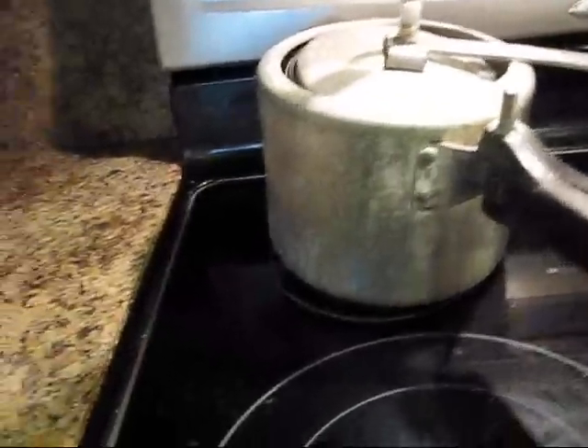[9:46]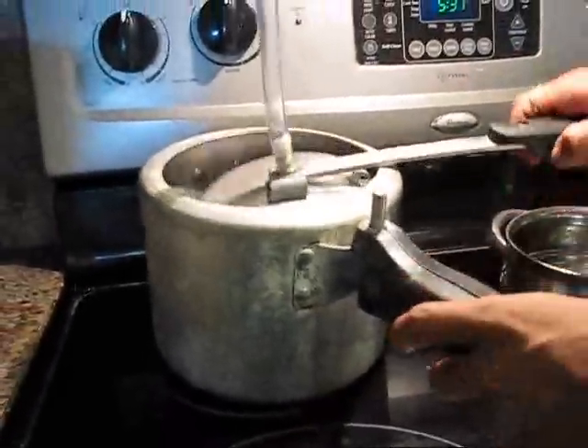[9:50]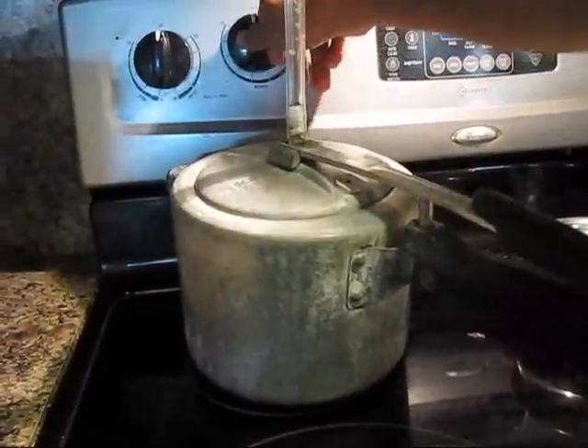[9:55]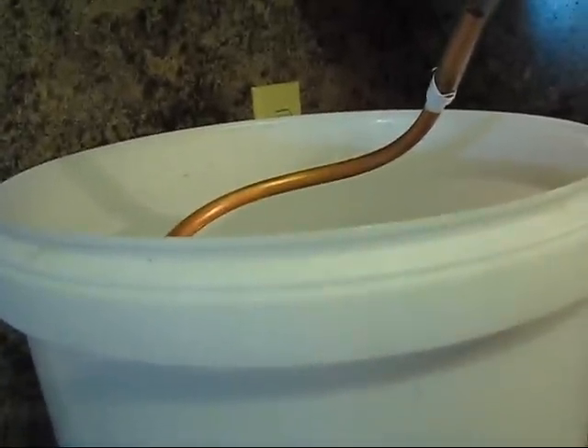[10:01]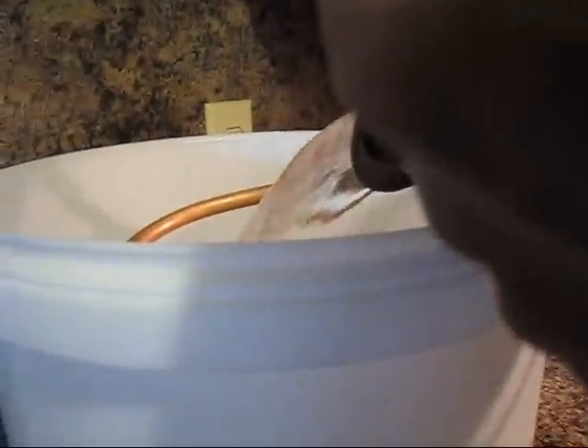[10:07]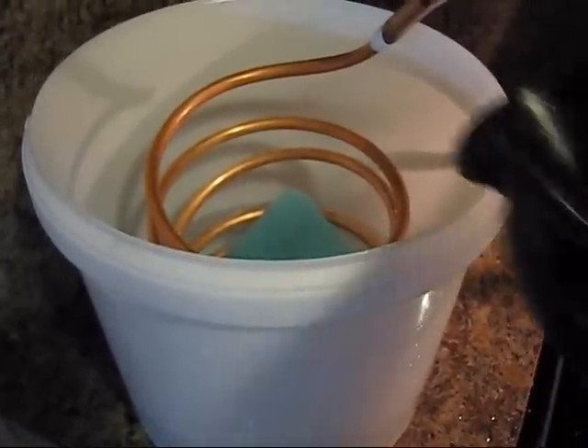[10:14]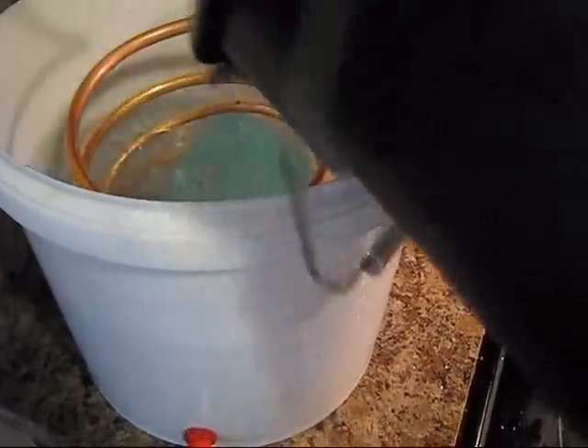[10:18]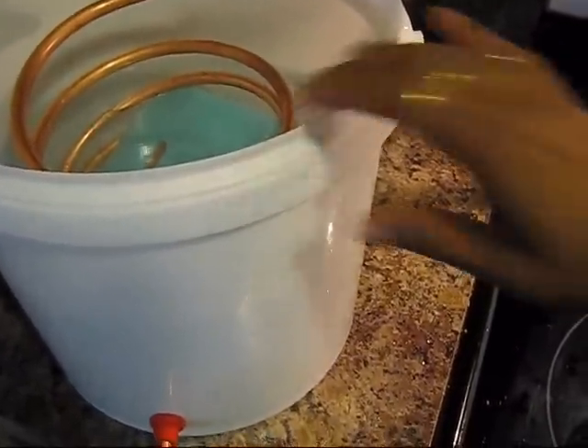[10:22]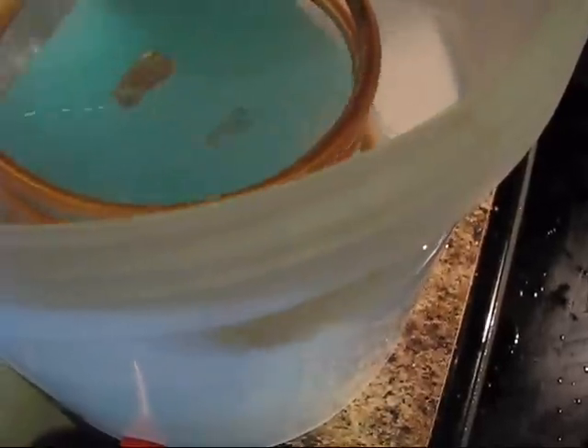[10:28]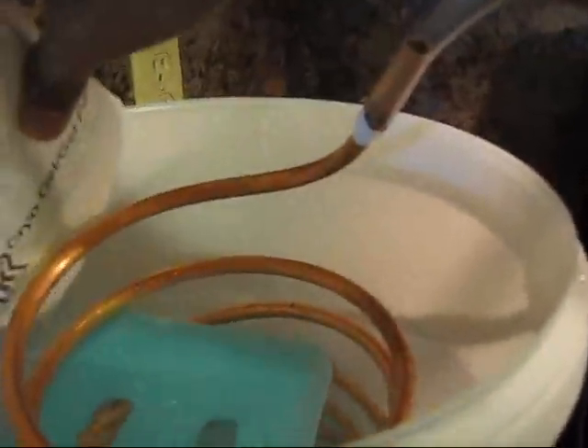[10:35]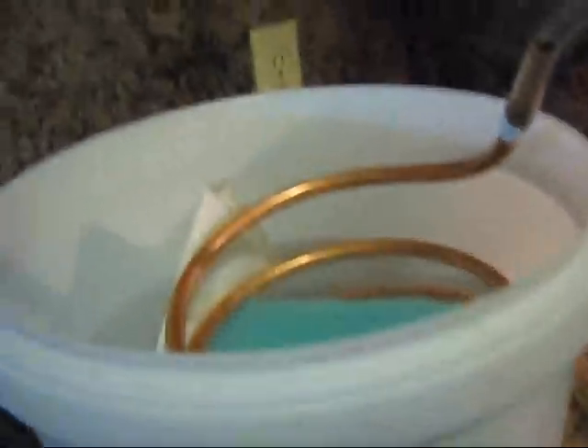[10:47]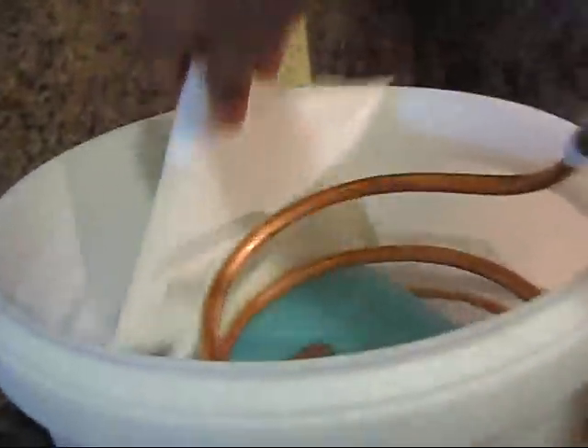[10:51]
Let's switch the heating on, and then I will put water in this bucket so that you can see. I am filling it. It's almost full, and I am using an ice pack to cool this water. Now you can see there is no leak in this outlet, which is very good.
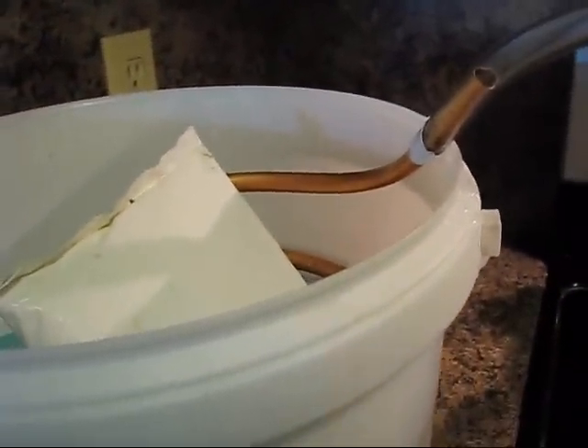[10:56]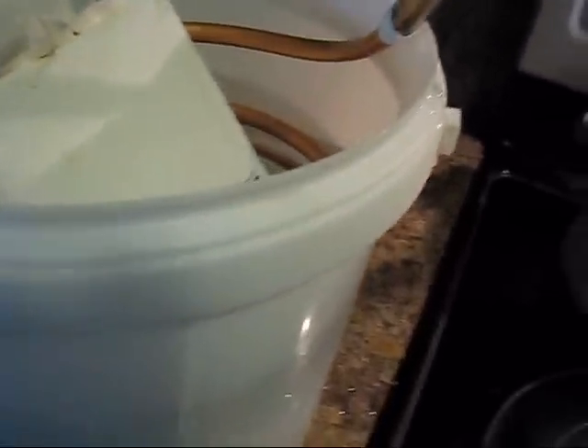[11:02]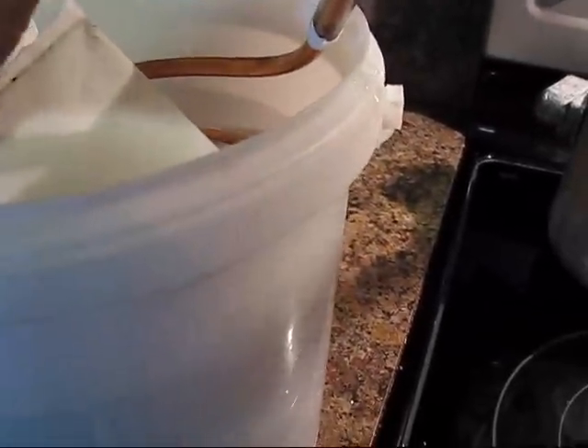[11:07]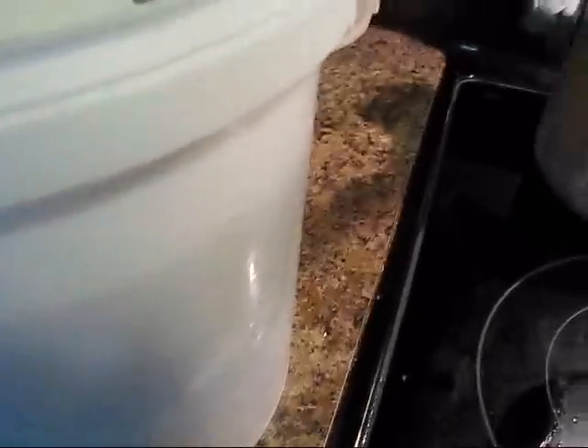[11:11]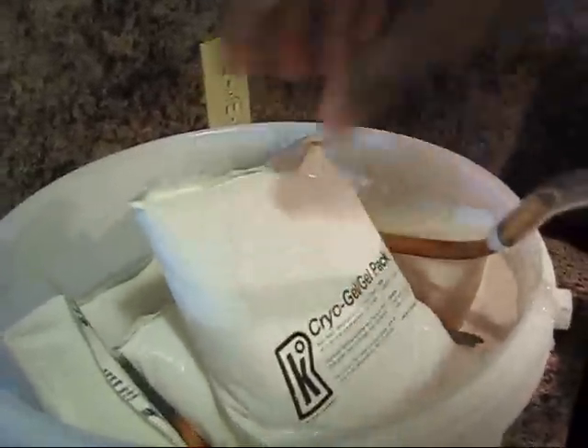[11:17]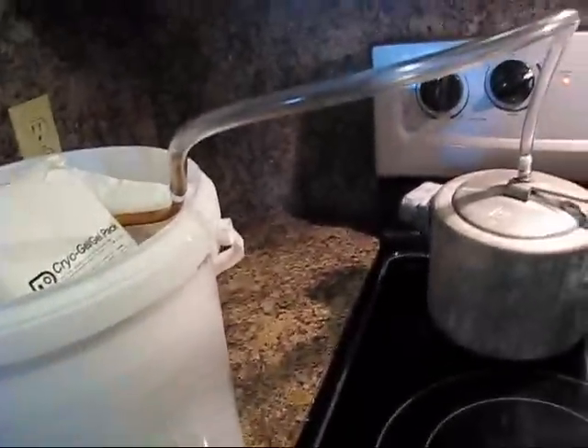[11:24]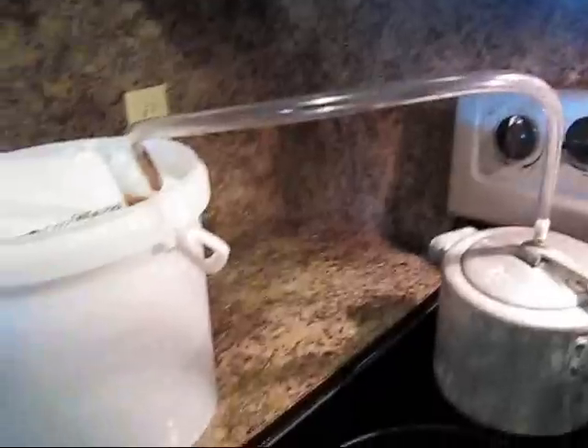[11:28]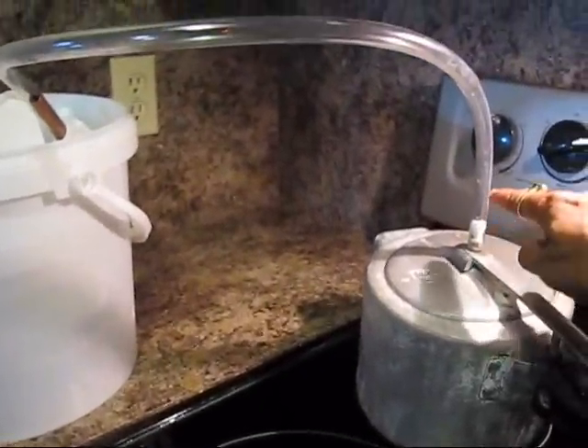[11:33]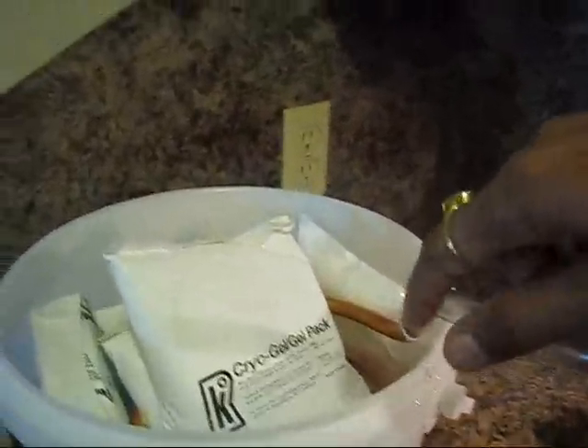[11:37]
To cool this water we can use either an ice pack or direct ice. I have some ice, so I can use these. It would be better to cool the water. So I am just filling this bucket with ice and cold water to make it cold. We will see once it starts boiling, if steam will come from this nozzle and go into the inlet, and it should cool inside the coil.
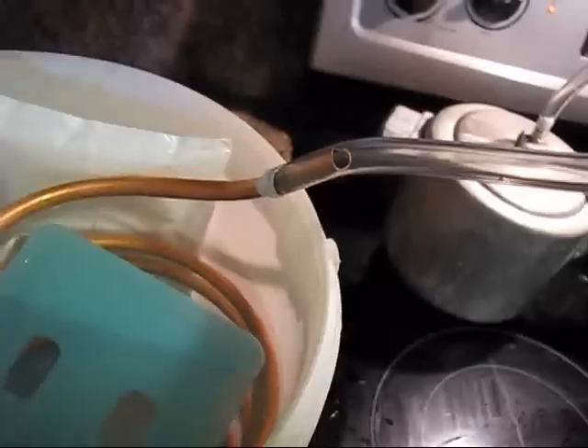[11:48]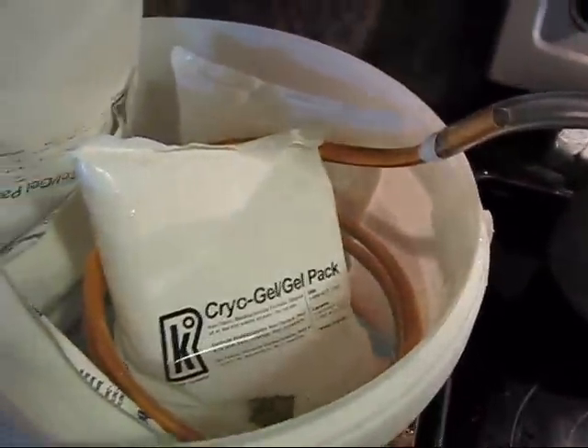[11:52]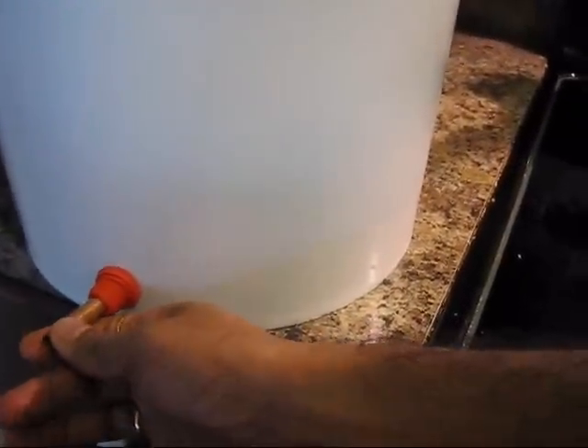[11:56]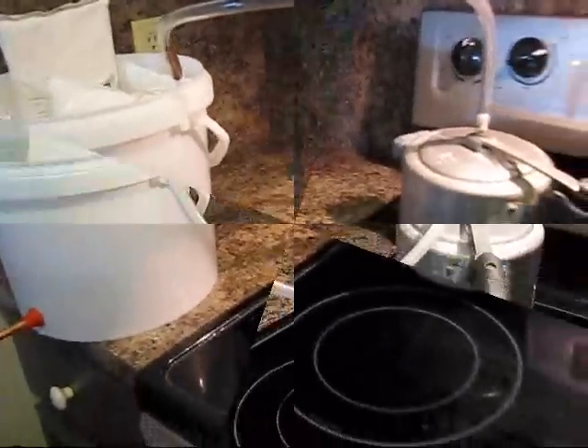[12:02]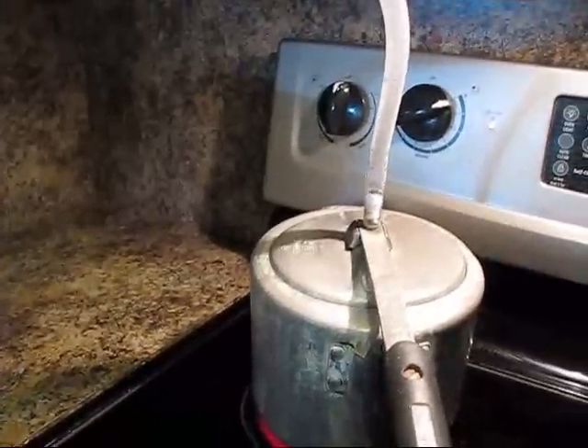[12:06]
And this coil will cool the water, and at the outlet we should get condensed water rather than steam. So we will see once it starts boiling. After some time, now you can see this water is boiling here.
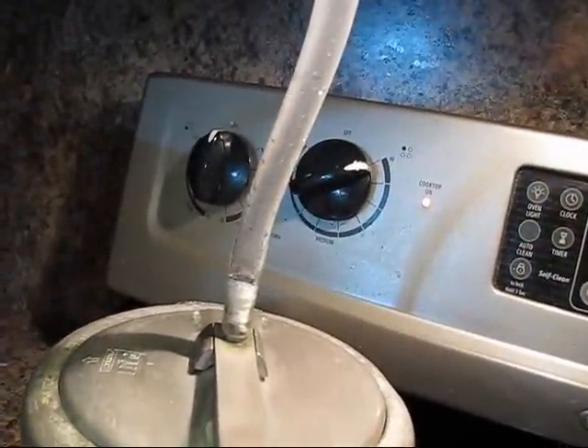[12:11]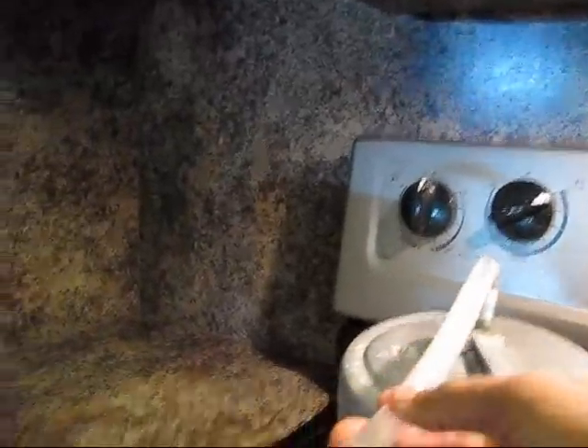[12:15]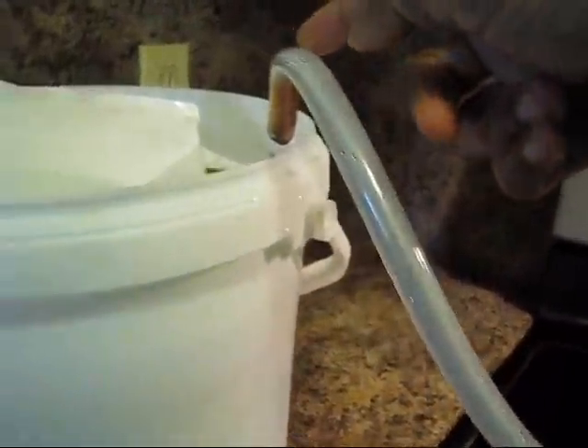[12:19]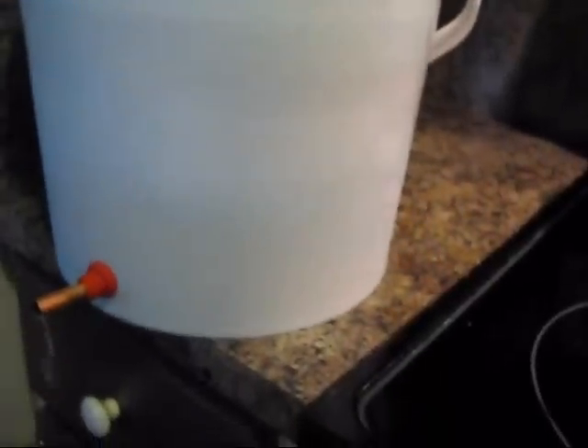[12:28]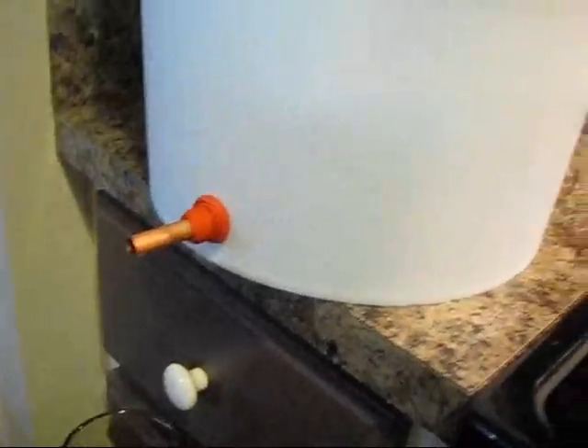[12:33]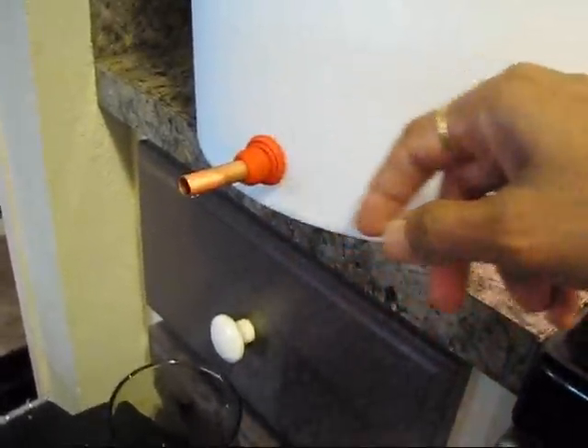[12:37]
And all the way steam is going inside, and this area is very, very hot right now. Let's see what is going on here. This is condensing, so water is condensing right now here and it's coming down from this outlet. So this system is working.
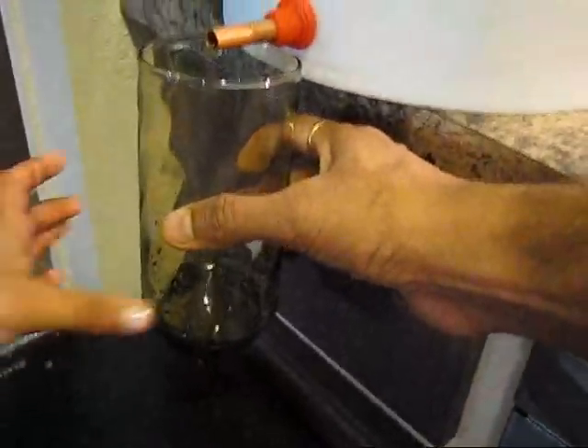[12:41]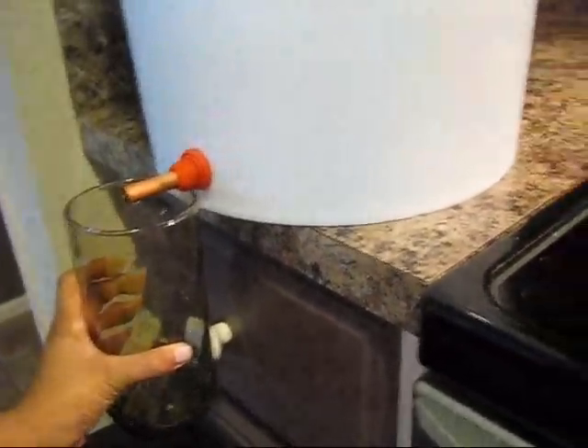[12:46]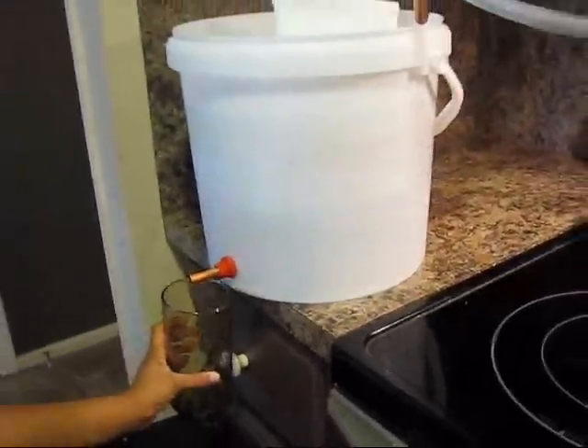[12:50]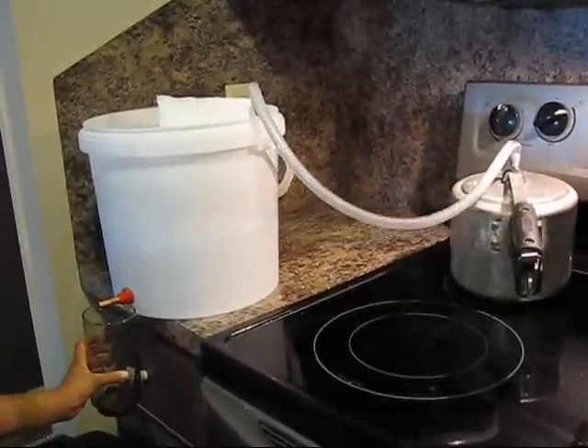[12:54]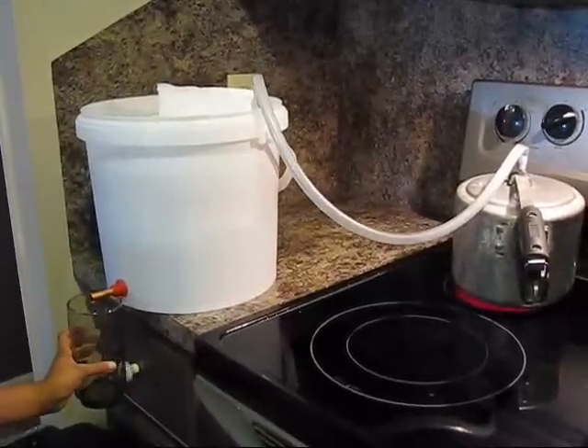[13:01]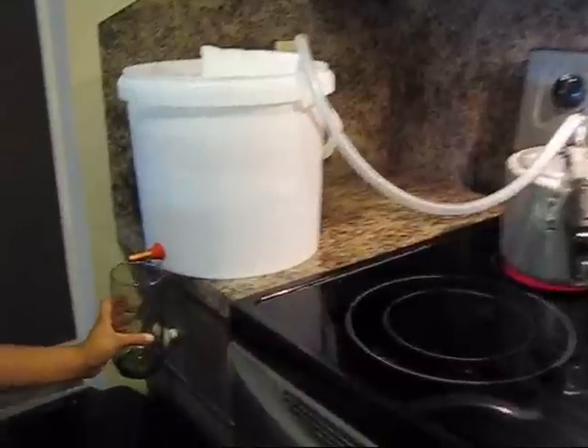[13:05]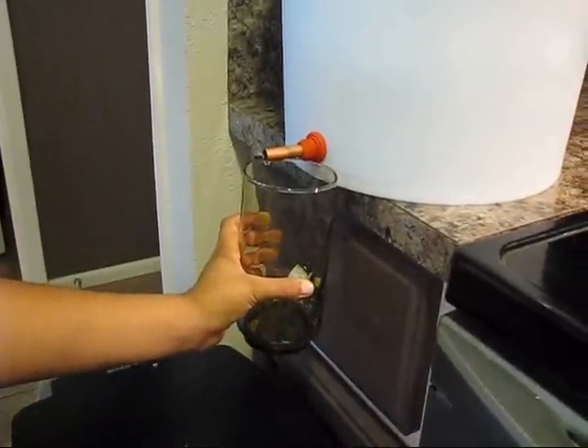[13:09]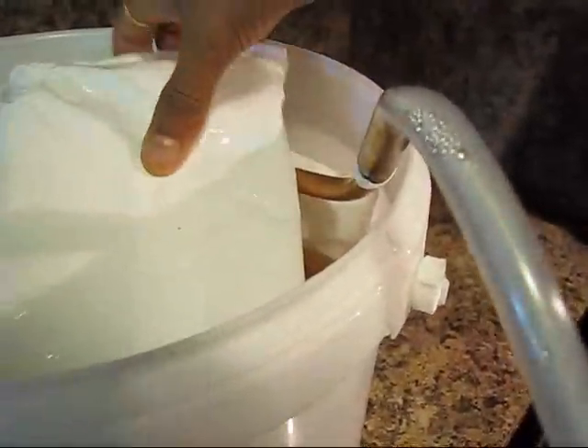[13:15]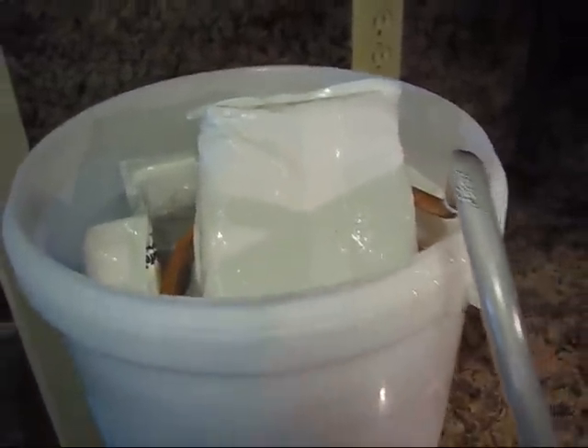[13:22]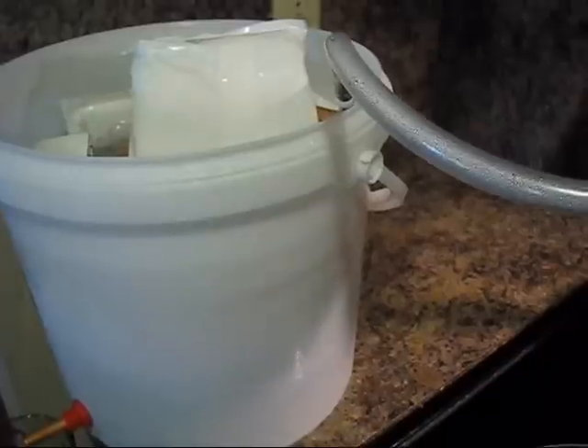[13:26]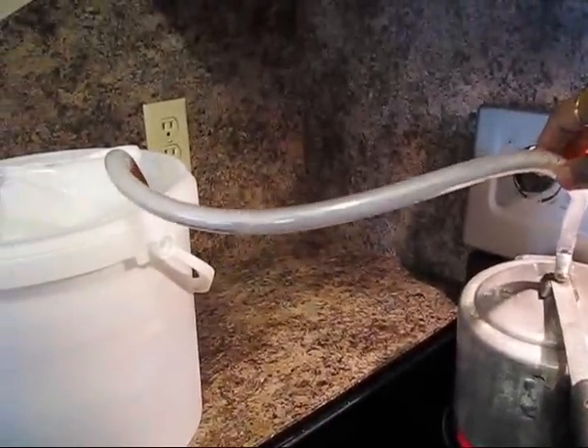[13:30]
And we can use this for steam distillation. So this is the very simple way you can see we are making a steam distiller at home using a pressure cooker and the copper coil. Also you can reuse these ice packs once again. You can put them in the freezer and then they will be ready, so you need not invest in purchasing ice or ice making.
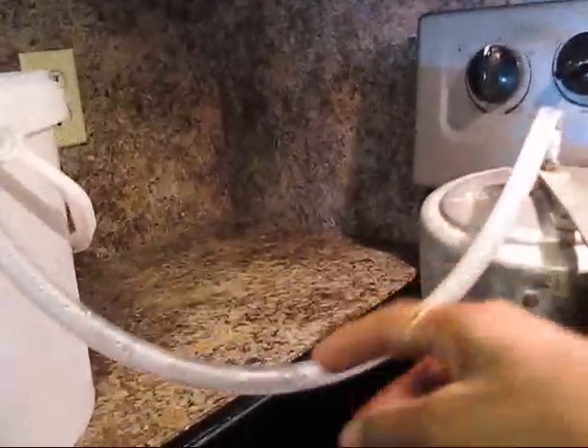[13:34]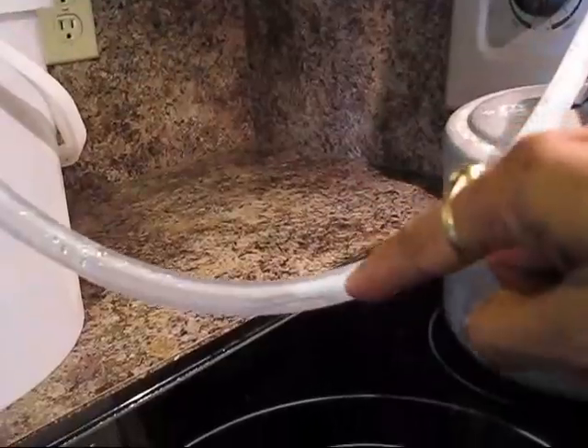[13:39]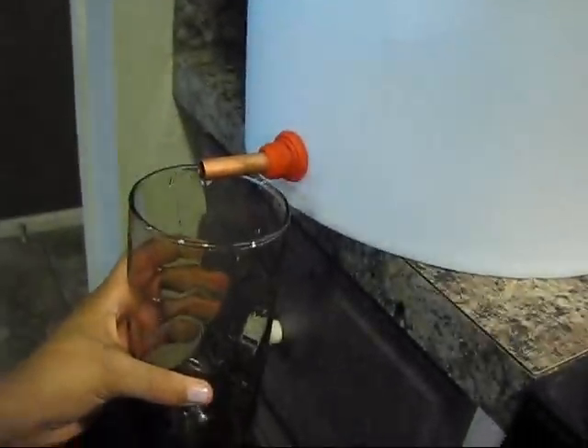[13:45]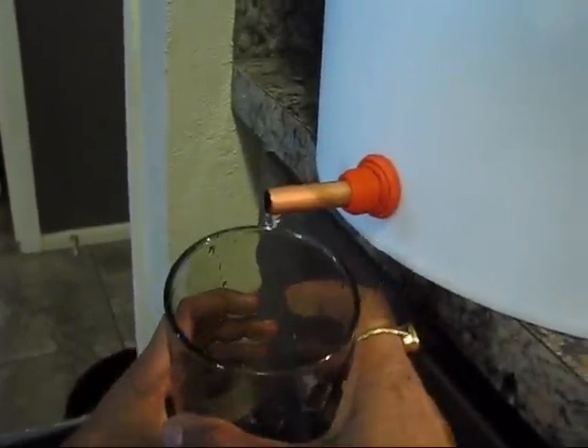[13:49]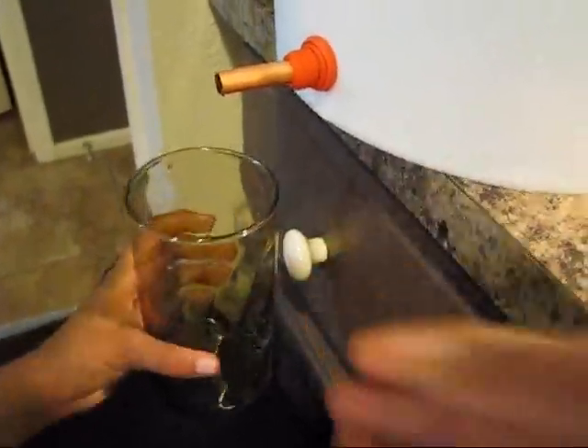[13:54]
And here you can see this water is also condensing, so we can just move it to come down. At this end it is condensing very nicely. Basically right now this is distilled water, which can be used for any purpose.
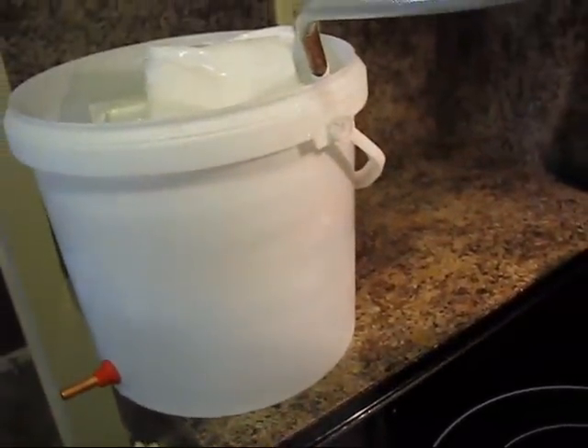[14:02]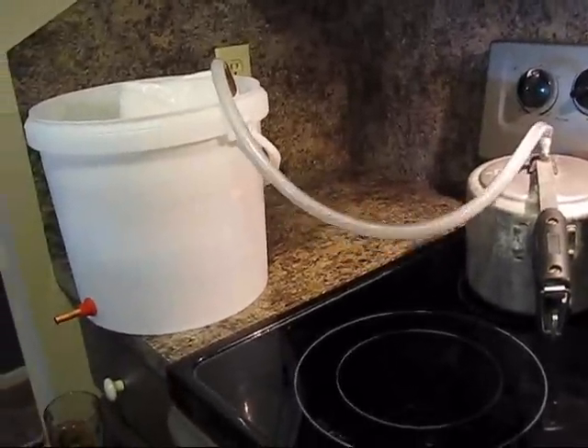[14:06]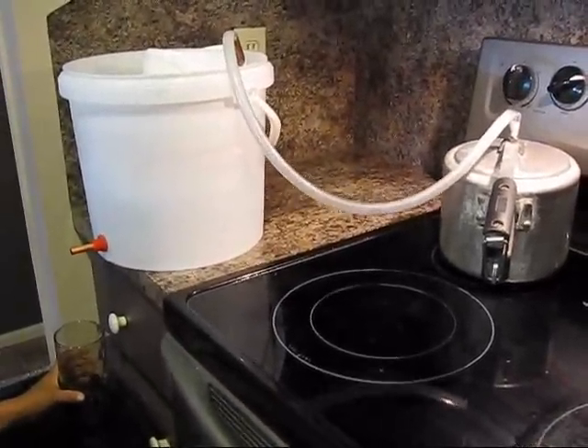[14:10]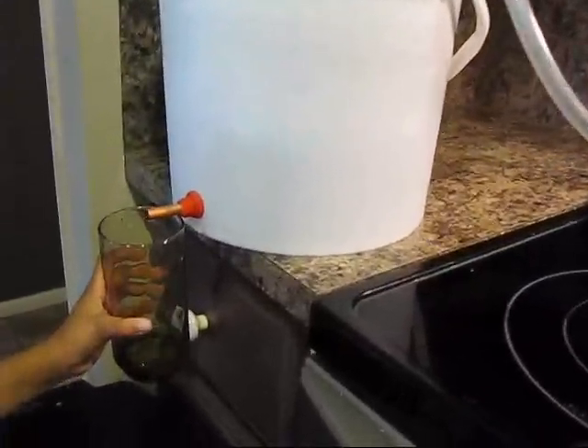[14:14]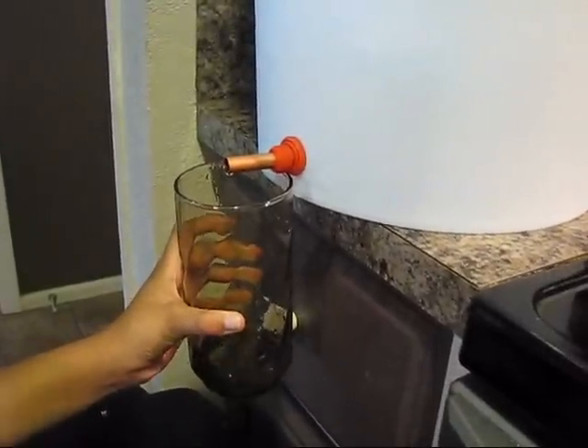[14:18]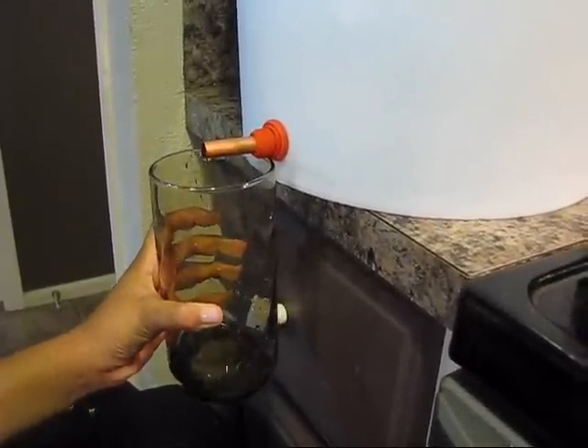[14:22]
And this method we will use to distill, to make essential oils at home. It's coming very fast, you can see these droplets are coming very nicely.
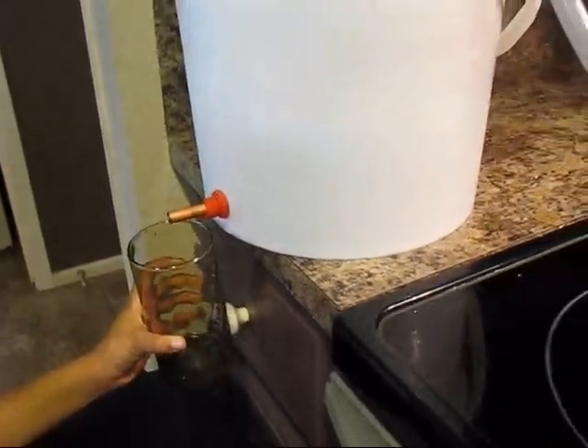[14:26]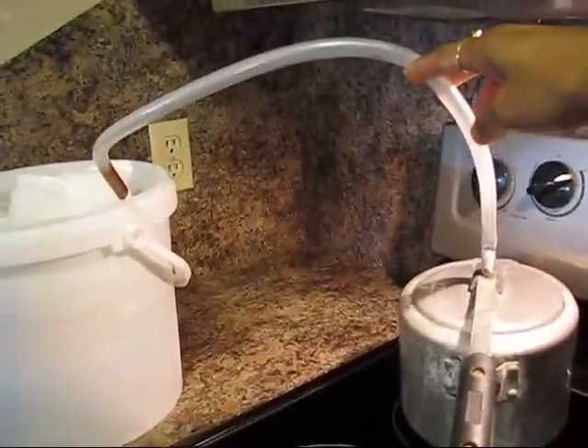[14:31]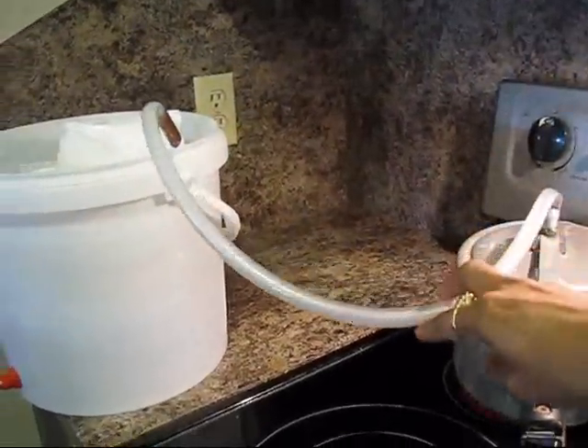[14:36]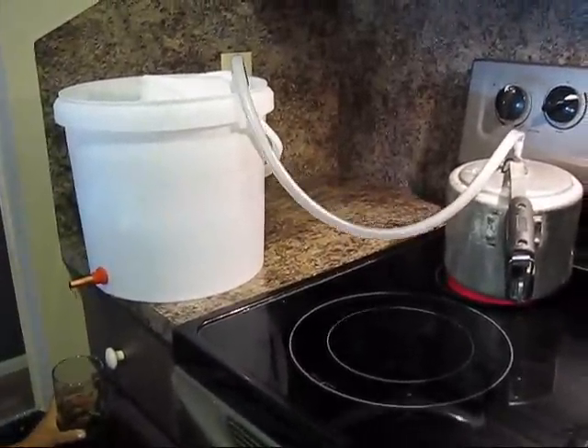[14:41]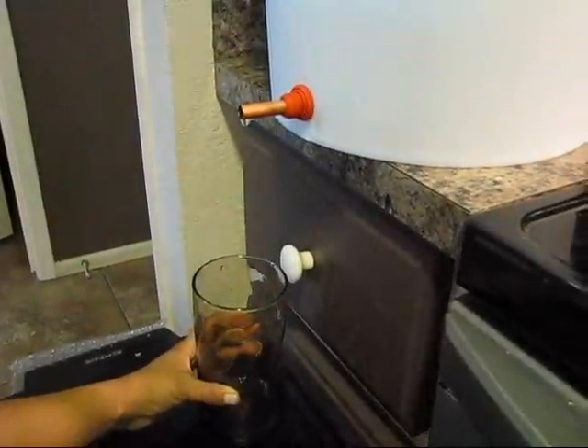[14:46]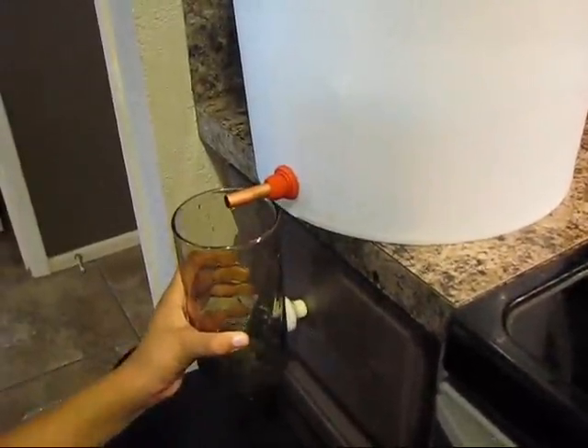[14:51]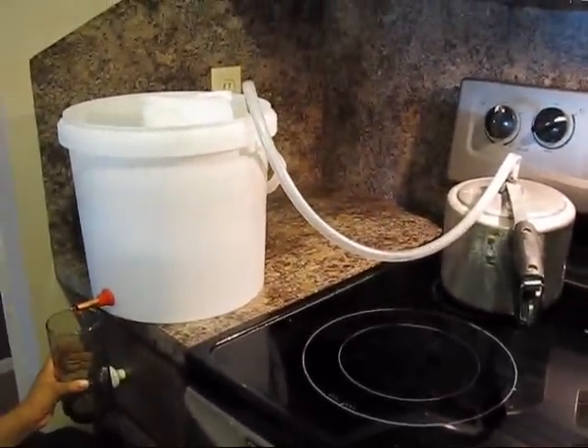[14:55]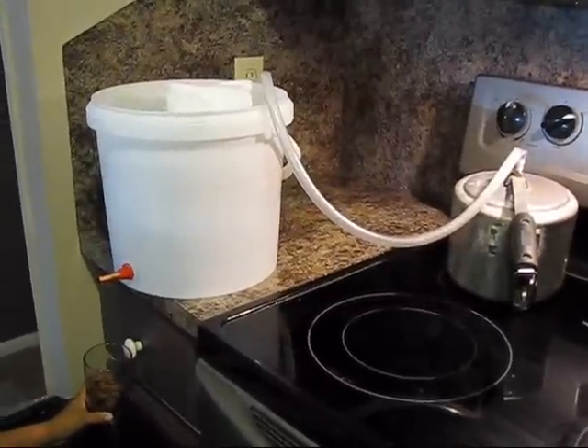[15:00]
So hope you enjoy this video. We will show you how to distill any other herb to extract the essential oil from that herb. Right now our system is working, and that is very good.